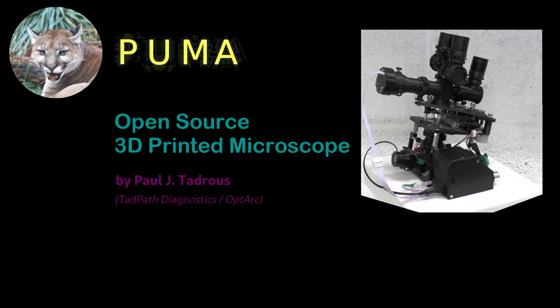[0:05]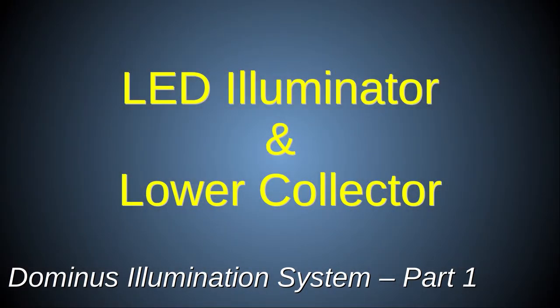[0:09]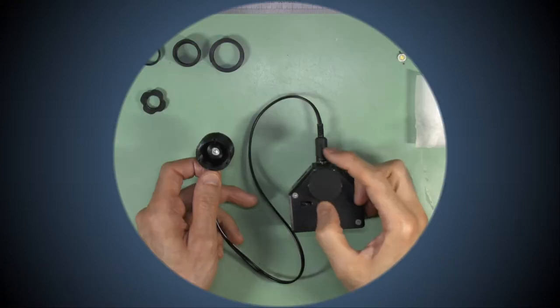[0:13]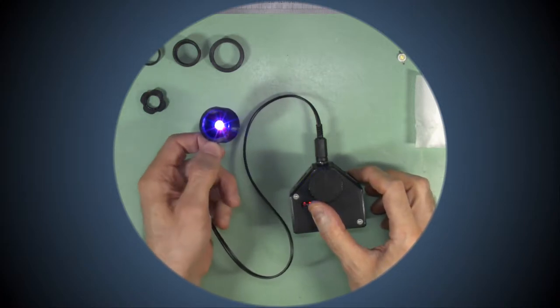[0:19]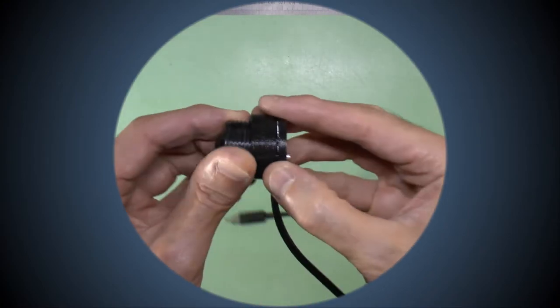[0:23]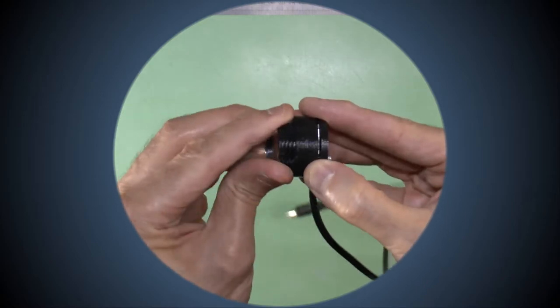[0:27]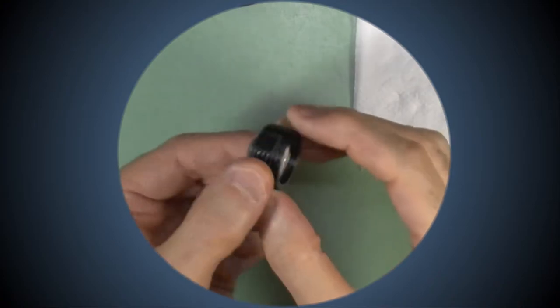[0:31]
In this video, I'll explain how to make the LED Illuminator module. This allows greater control over illumination compared to the passive mirror of the basic foundation scope. The illuminator is always used with a collimator lens system of some kind. So, I'll show you how to build the 2x23mm lower collector collimator.
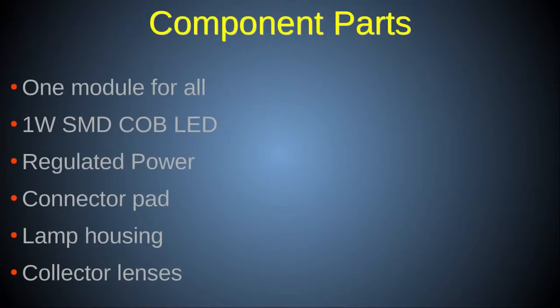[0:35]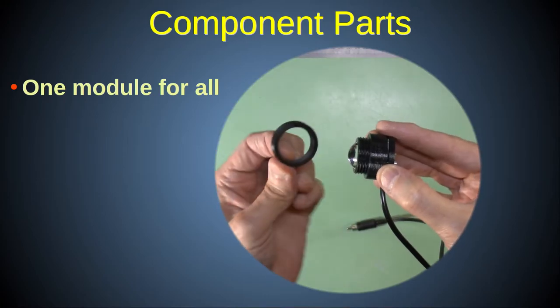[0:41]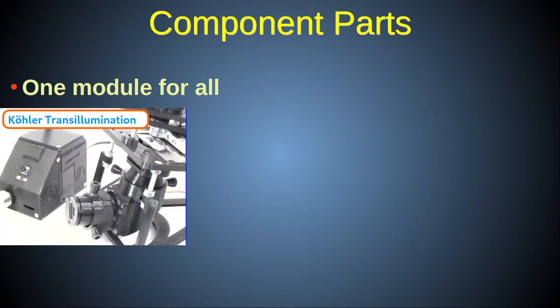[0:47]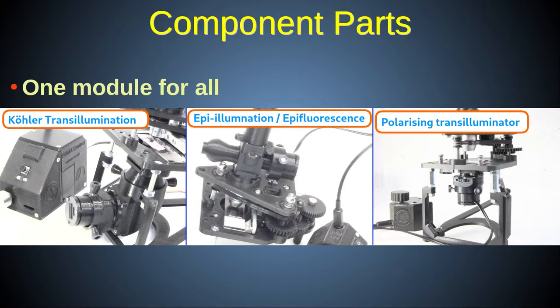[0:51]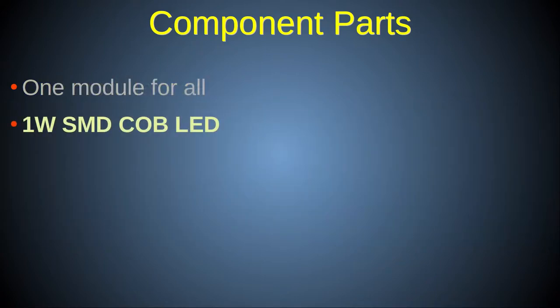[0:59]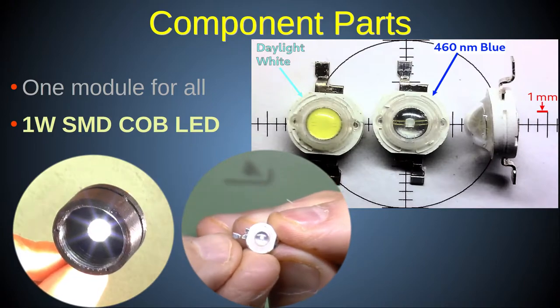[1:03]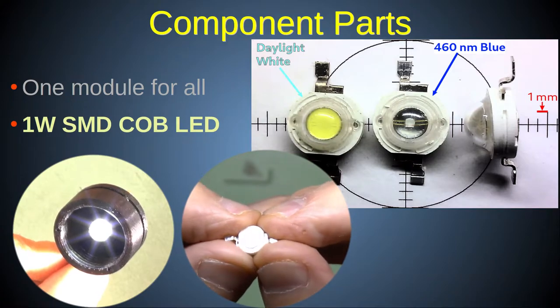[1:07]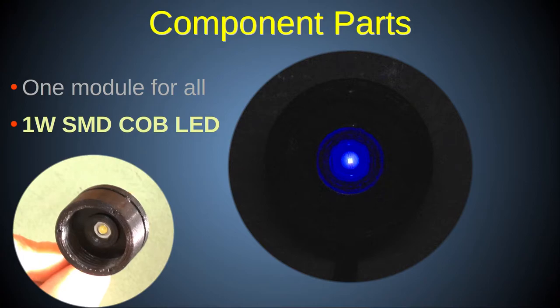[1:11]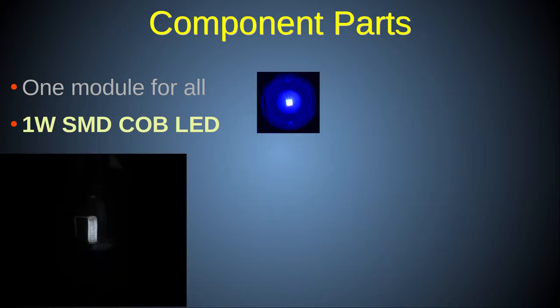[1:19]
First, I'll give you an overview of the components of the PUMA LED illumination system. PUMA was designed to use a single illumination module for all types of microscopy. By swapping in and out a few standard parts, you can use the same module in transillumination, epi-illumination, fluorescence, polarisation, etc. The light comes from an energy-efficient, generic 1-watt surface mount LED bulb that has an approximate point source illuminating area. This is near the theoretical optimum for microscope illumination because it is not spread out in a pattern as with filament bulbs, gas mantles, or a candle flame.
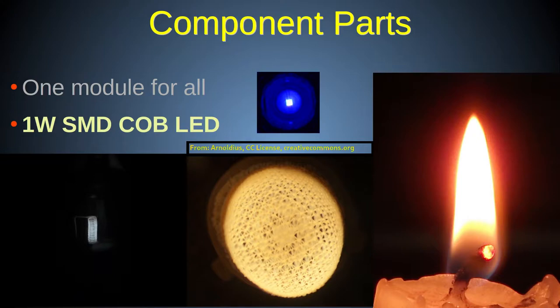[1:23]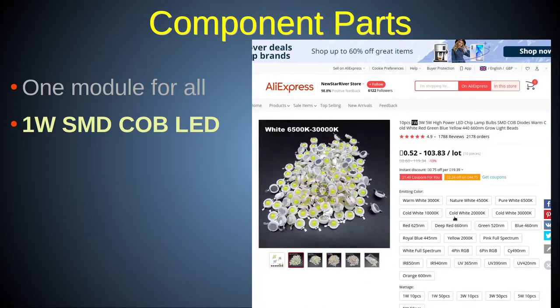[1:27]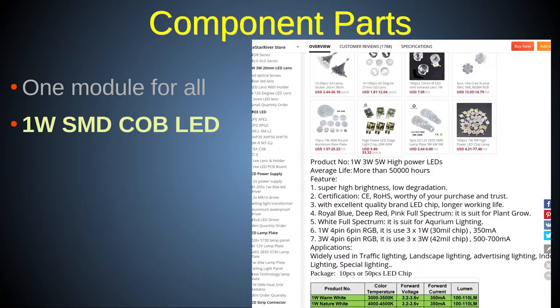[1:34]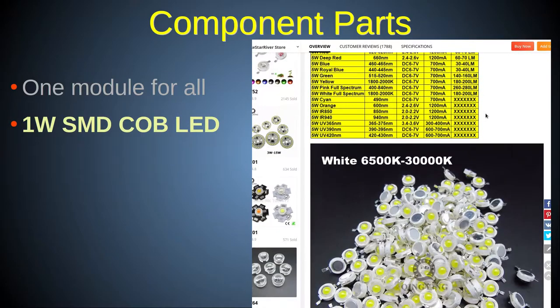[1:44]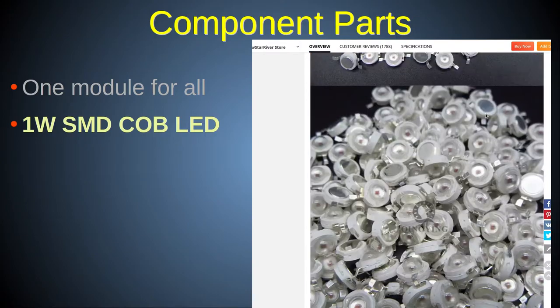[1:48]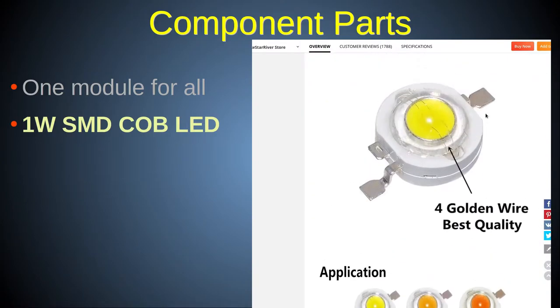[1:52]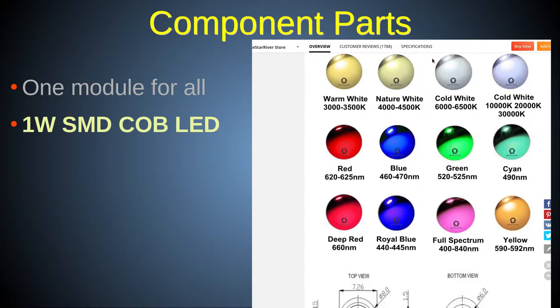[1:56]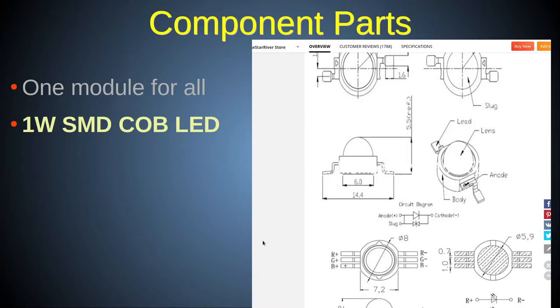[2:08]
Furthermore, these LEDs are available in a wide variety of wavelengths, including various types of white. For most non-fluorescence work, I use the daylight white version, which has a color temperature of 6,500 to 7,000 Kelvin and a brightness rating of 100 to 110 lumens. The single color LEDs are good for specialist applications, such as fluorescence microscopy with various fluorophores. Because all the bulbs are the same form factor and energy rating, you can easily just exchange the bulb in the same PUMA lamp housing module to switch from, say, white light illumination to fluorescence microscopy.
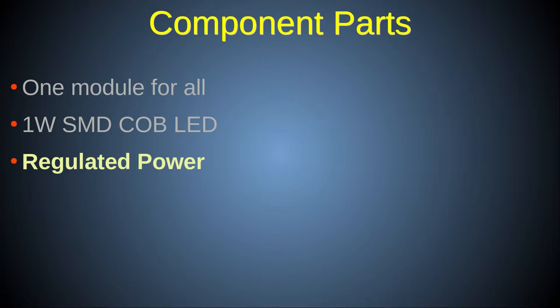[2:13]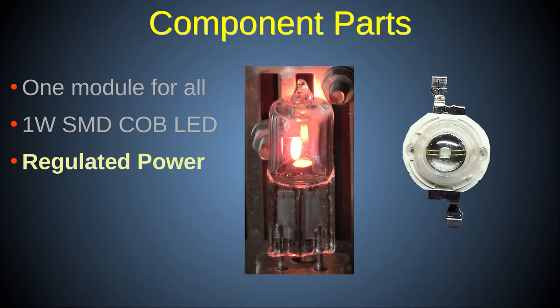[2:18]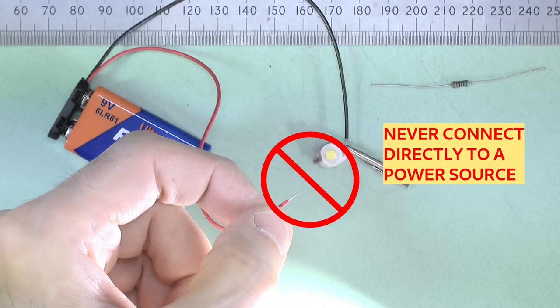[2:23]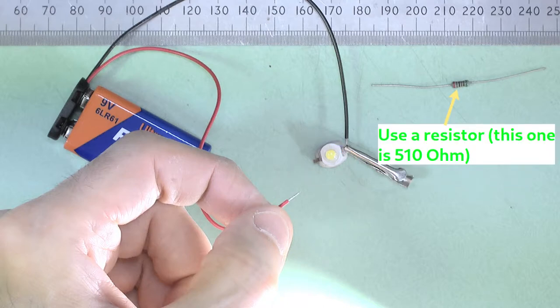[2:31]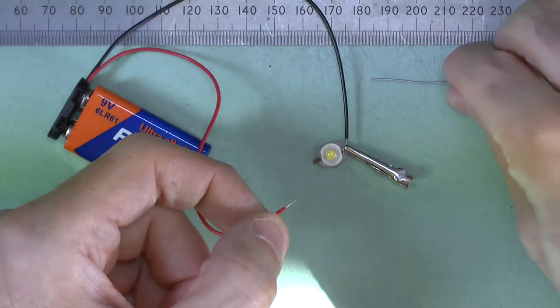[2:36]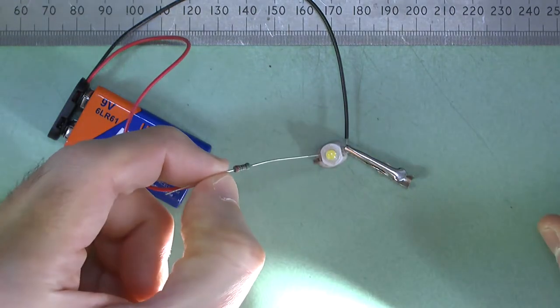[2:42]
Unlike an incandescent bulb, these LEDs have minimal internal resistance, so you cannot just hook them up directly to a battery or power supply because this will cause them to blow instantly. For that reason, you must always use a suitable current-limited power supply. Using a simple resistor in series with a battery will suffice, but it is not very practical or energy efficient. Your battery won't last long, and if using an external power adapter, you will waste a lot of the energy as heat in the resistor.
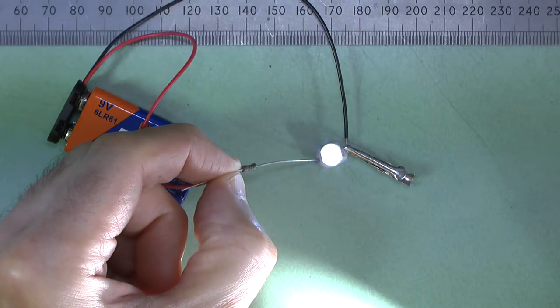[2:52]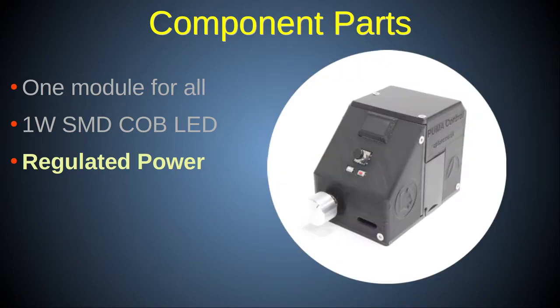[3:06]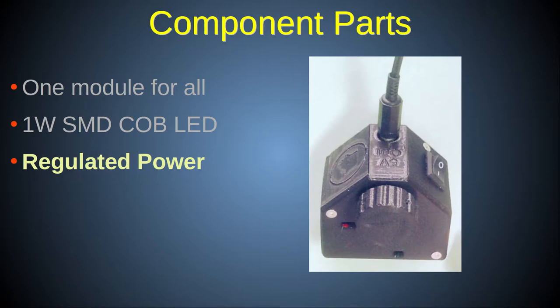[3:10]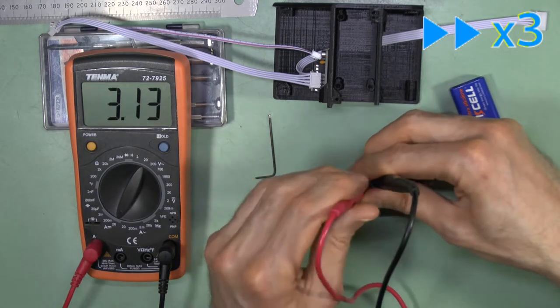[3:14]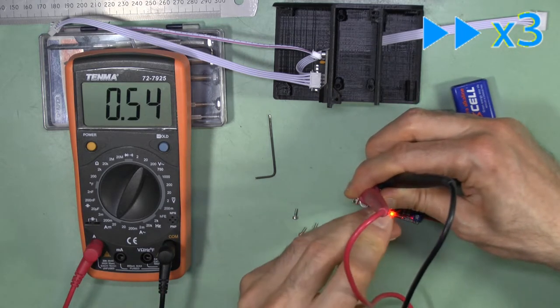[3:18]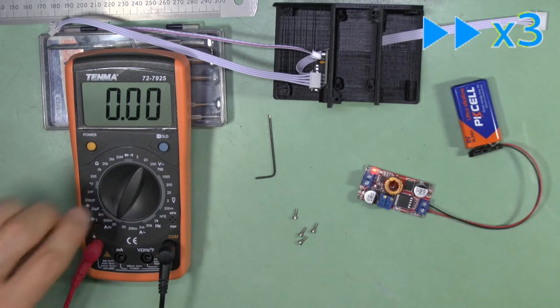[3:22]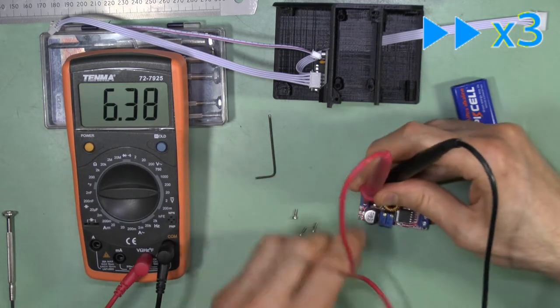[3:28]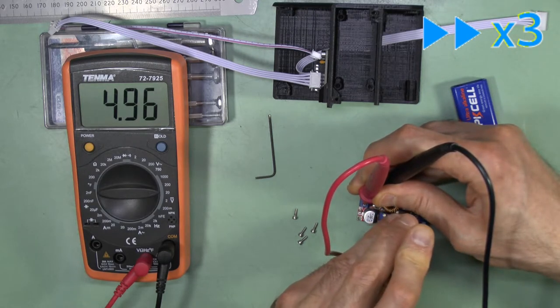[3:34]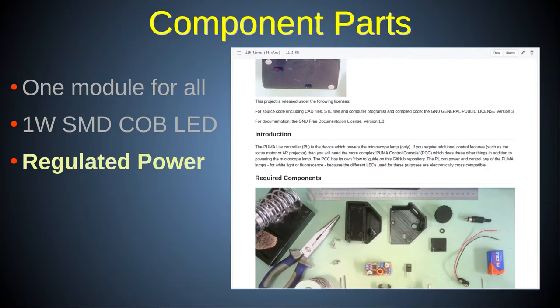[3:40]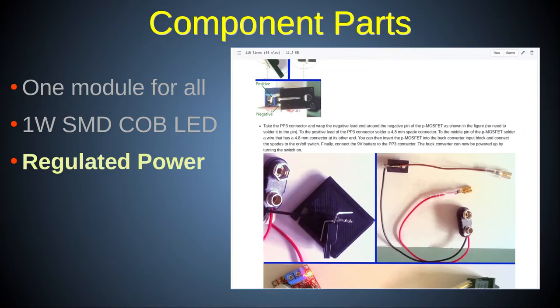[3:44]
For this reason, the PUMA system uses a generic current regulated power module. The same power module is used in PUMA's two portable battery-operated control units, the advanced PUMA Control Console and the simple PUMA Light. This regulator limits the current to a maximum safe level when set correctly, and also to a standard voltage, 5 volts, so gives predictable and reproducible brightness regardless of fluctuations in the input power supply, whether that's a battery or external power adapter. In this video, I'll be using the PUMA Light control unit, and a detailed tutorial on how to build it is available on the PUMA GitHub page, a link to which is provided in the video description.
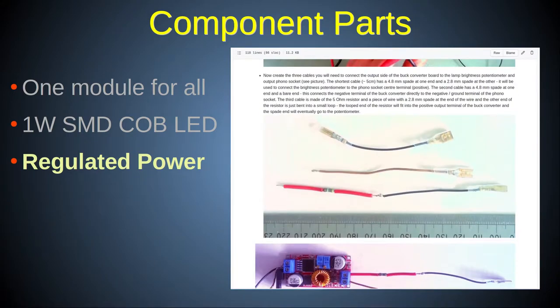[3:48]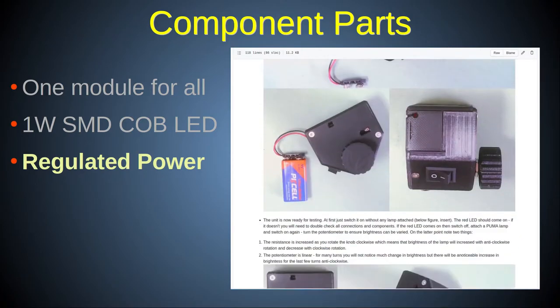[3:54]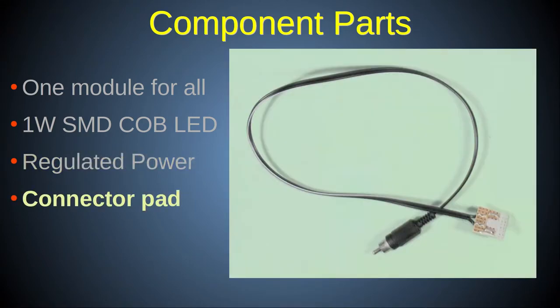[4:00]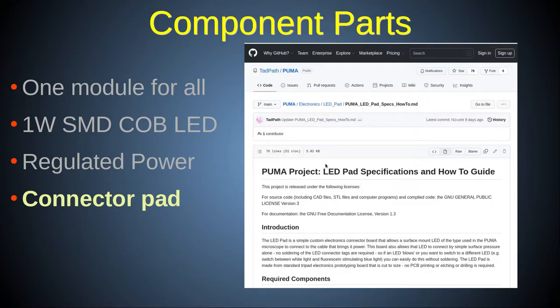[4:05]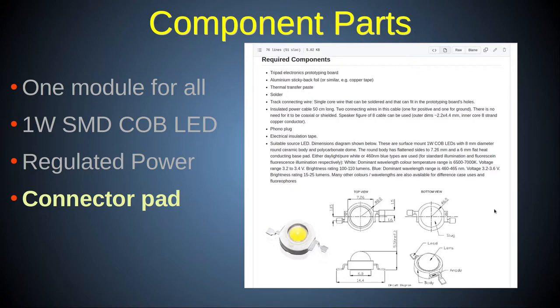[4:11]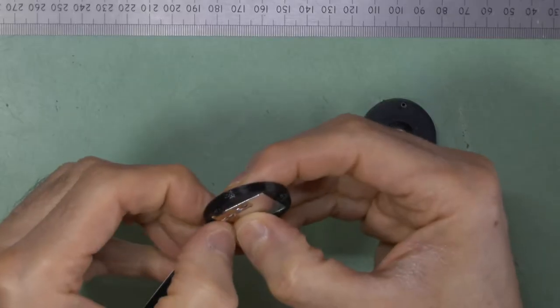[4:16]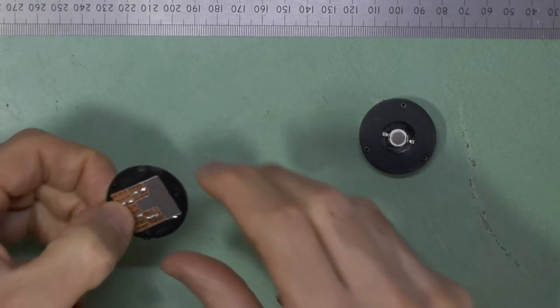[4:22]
So, we have our LED and we have a suitable power supply, but in order for these to be useful, they must be connected to each other. The PUMA standard specifies a simple LED connector pad and cable combo to do just that. Details of how to build this connector pad are also given on the GitHub page. One of the design features worth noting here is that this connector is a simple pressure fit to the LED, meaning that there is no soldering required of the LED to the pad. This makes it easy to simply swap in and swap out LED bulbs for any reason, at any time.
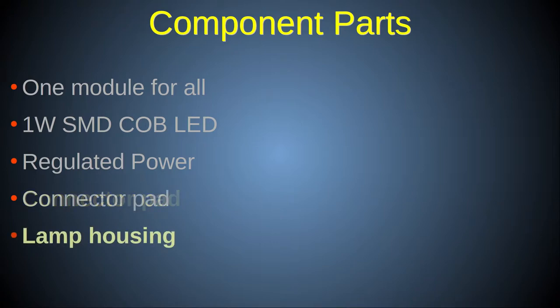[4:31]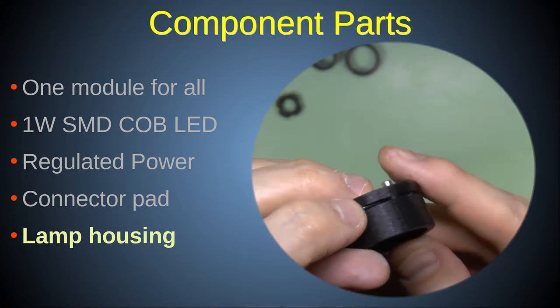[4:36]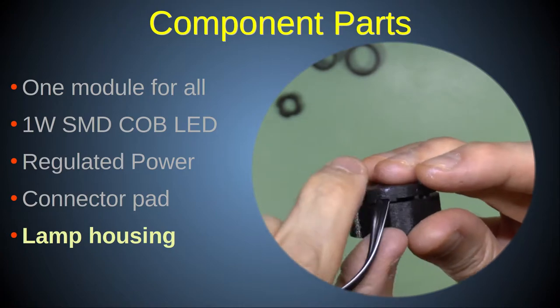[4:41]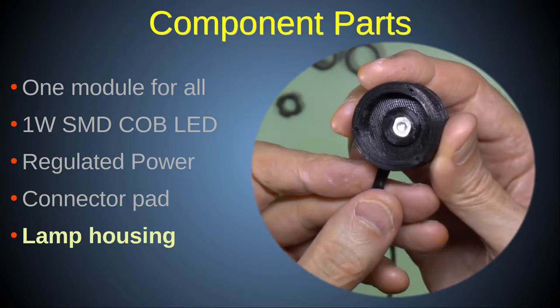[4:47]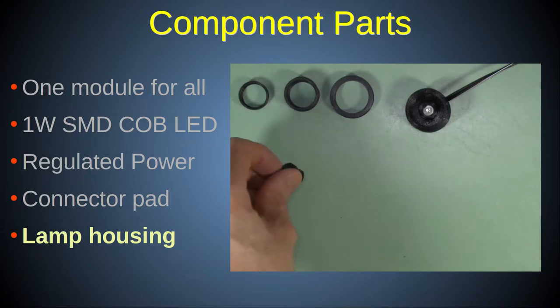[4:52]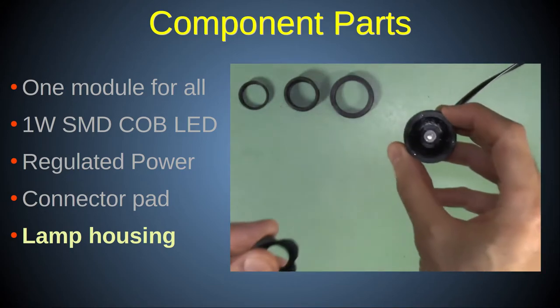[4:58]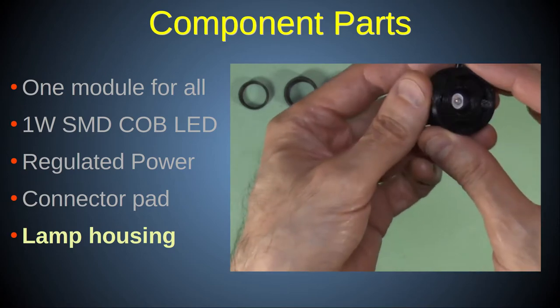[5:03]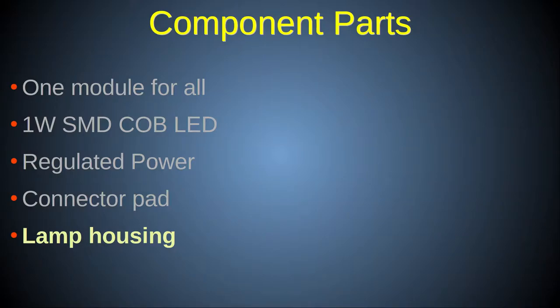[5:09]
In order to hold the LED bulb against the connector pad and keep everything together in a unit that can be easily coupled to the microscope, PUMA specifies a 3D printed LED lamp housing, and I'll show you how to construct that shortly. The lamp housing is designed to accept a spacer and various filters to allow adjustment of the light intensity, diffusion, and wavelength, as well as to adjust the spacing of the LED from the lower collector lenses to adjust the beam collimation to be optimal for different illumination modes, as will be discussed later.
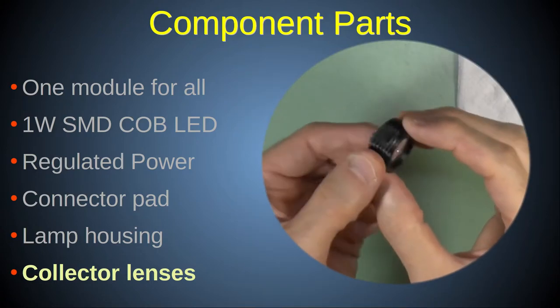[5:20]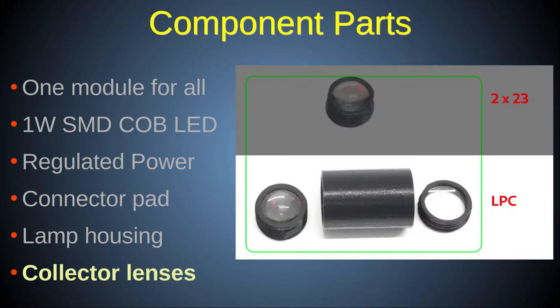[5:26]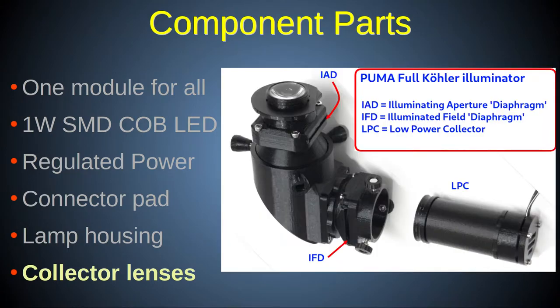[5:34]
Finally, the LED illuminator is always used with some kind of collector lens assembly, with only one exception: the 2x23mm lower collector system is used, and I will show you how to construct that in this video. The exception to this rule is the LPC, or low power collector, which is only used in the very special case where full field Köhler illumination using a x4 objective is required. This is something that even expensive professional microscopes cannot do, but PUMA can, and this will be described in a separate tutorial on Köhler illumination.
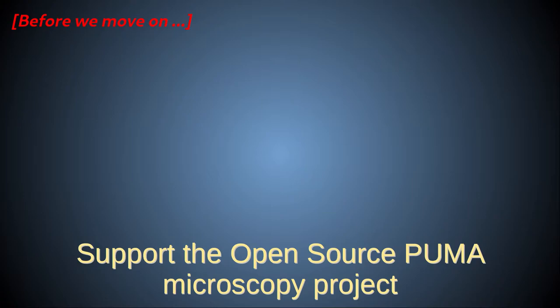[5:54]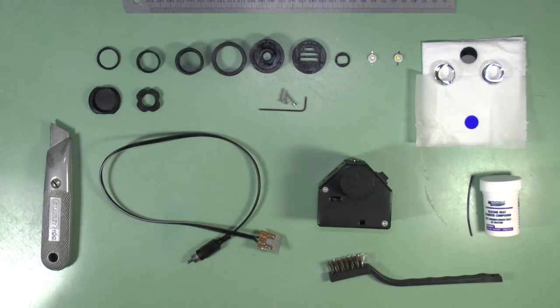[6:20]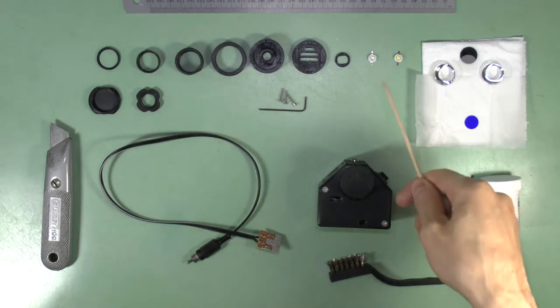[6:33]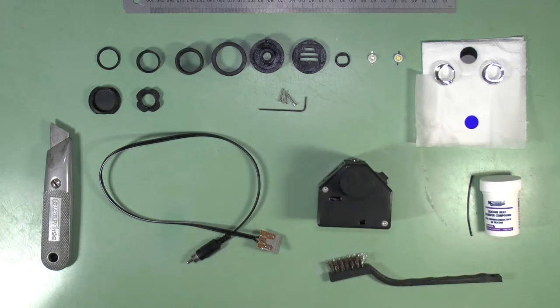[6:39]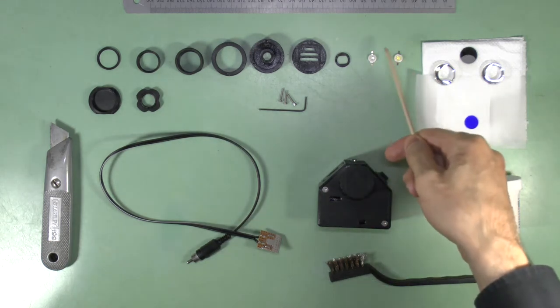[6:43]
These are the parts and some of the tools you'll need to build the LED lamp housing and 2x23mm collector lens. Details are provided in the video description. In this demo, I'll be building a 450nm blue light illuminator, suitable for fluorescence microscopy, but the method is the same for any color LED, including daylight white.
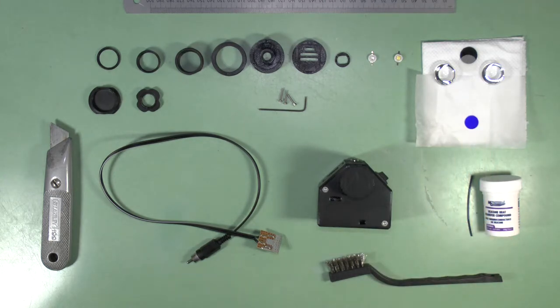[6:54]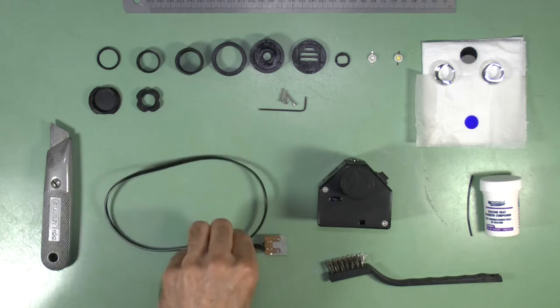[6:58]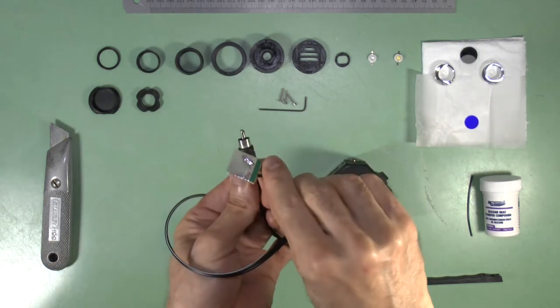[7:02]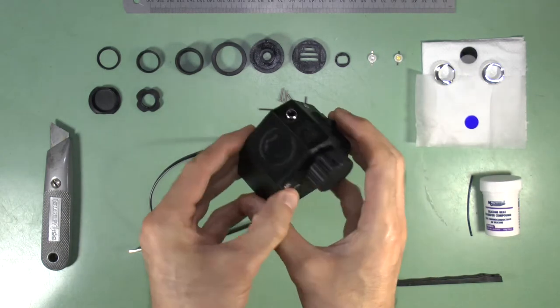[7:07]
I chose this example because it allows me to show you the method for adding an excitation bandpass filter, which is not needed for white light. This demo assumes you have already made the LED connector pad, as shown in the detailed instructions on the PUMA GitHub page, and have a suitable power supply available for testing, such as the PUMA light controller, the construction of which is also described on the GitHub page.
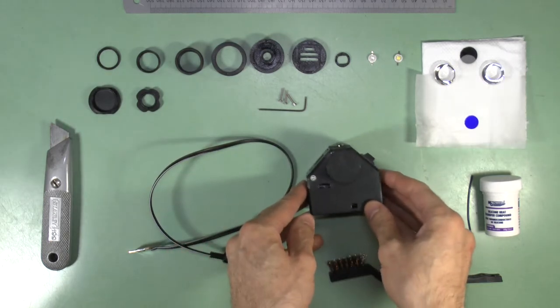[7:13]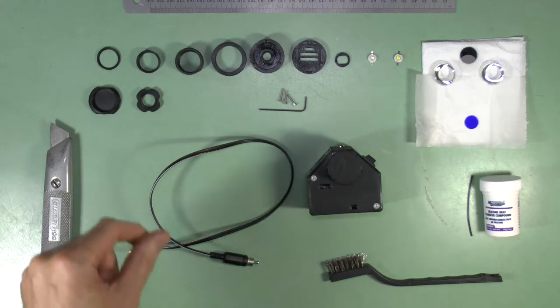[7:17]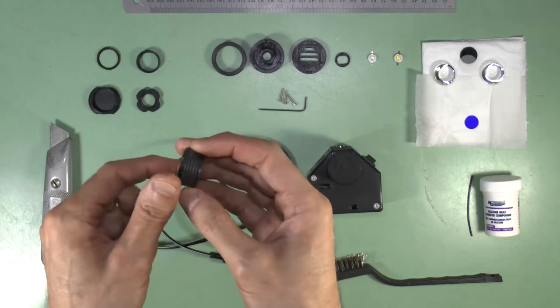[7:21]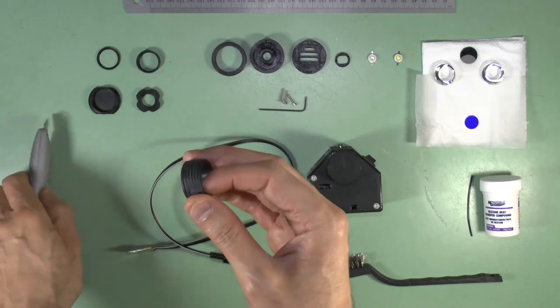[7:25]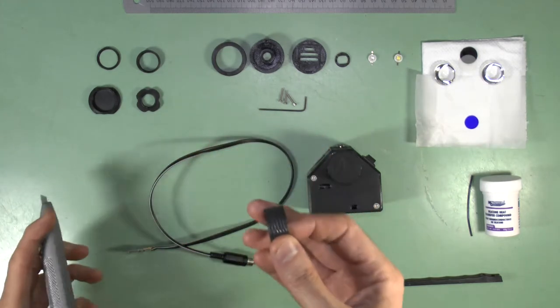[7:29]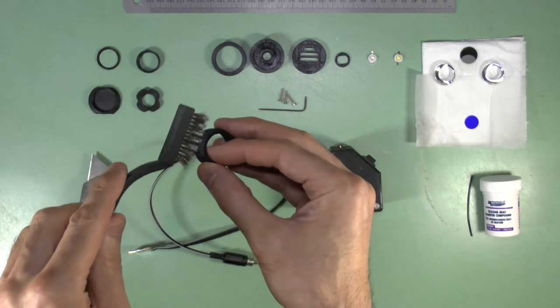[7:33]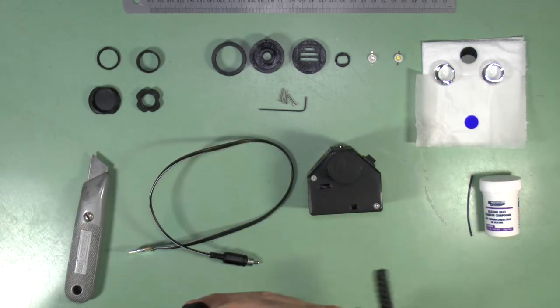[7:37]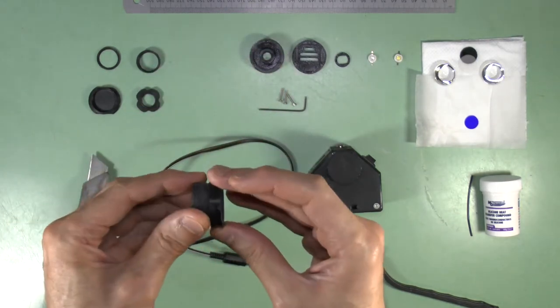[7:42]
The first thing to do is ensure that your printed parts are cleared of any 3D printing imperfections, and that the threaded parts thread into and onto each other well and without hindrance. This may take some scraping or clearing of the threads with a knife and a wire brush, and repetitive trying of one thread onto another. In my experience, the 3D printed seams are the regions where most resistance occurs, so scraping these down may be a good place to start if you encounter problems.
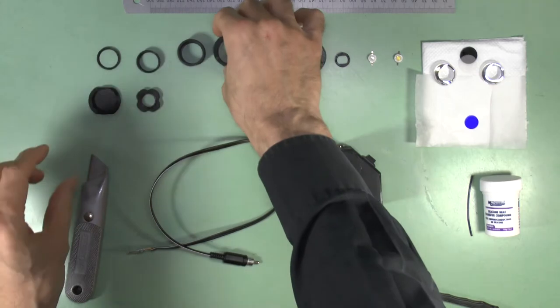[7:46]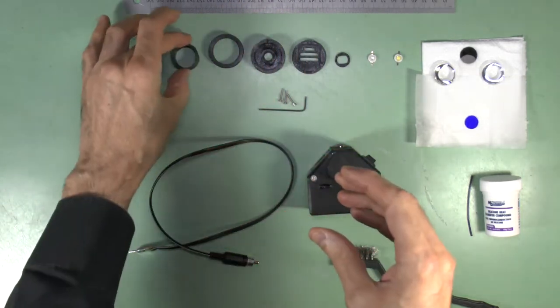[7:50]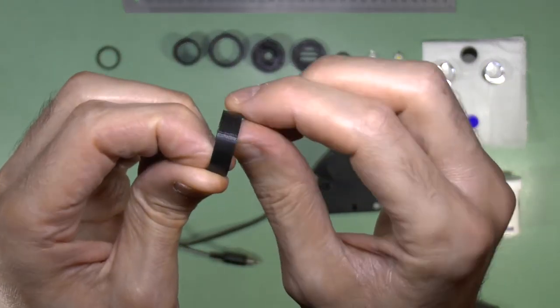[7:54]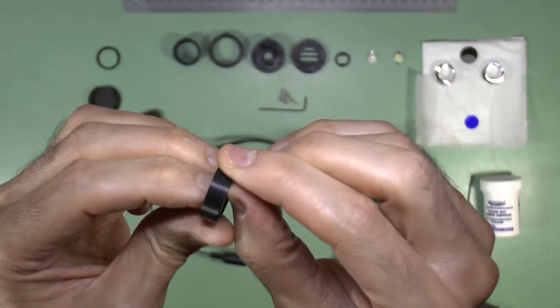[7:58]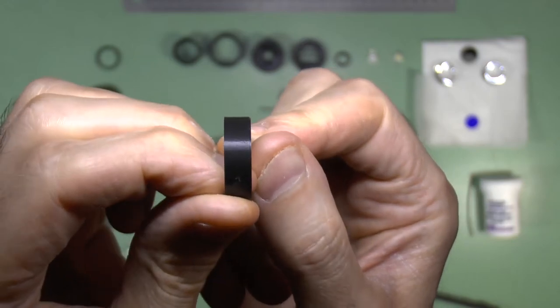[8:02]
Don't sand or otherwise smooth the inner aspect of the LC receptacle or the outer aspect of the LC collars, because we use the friction of the interlocking 3D printed layer lines to adhere these together during construction, so only remove any obvious blebs or loose plastic threads from these parts.
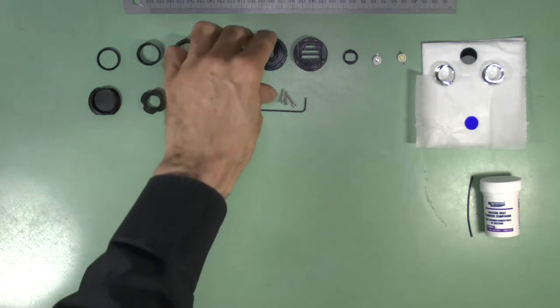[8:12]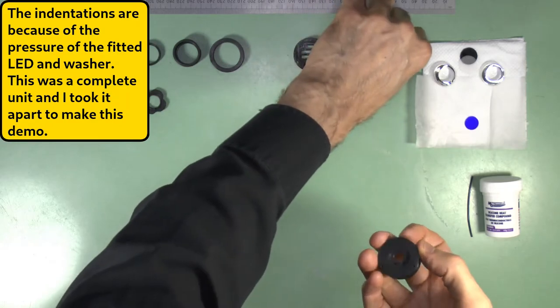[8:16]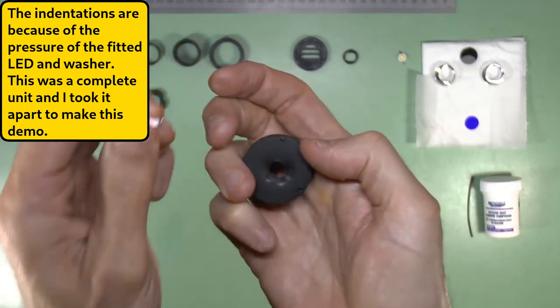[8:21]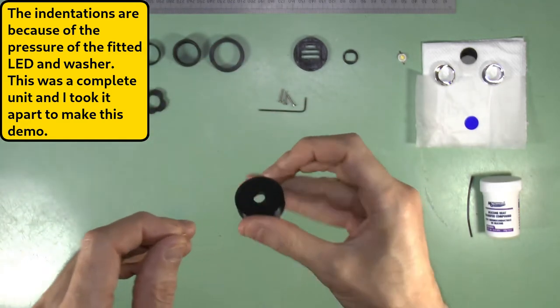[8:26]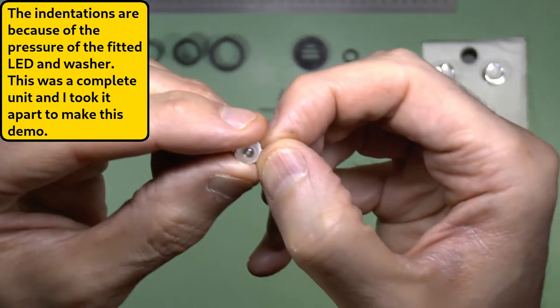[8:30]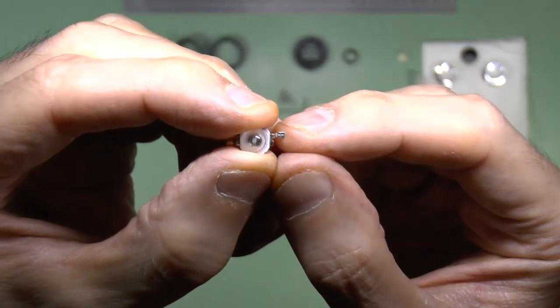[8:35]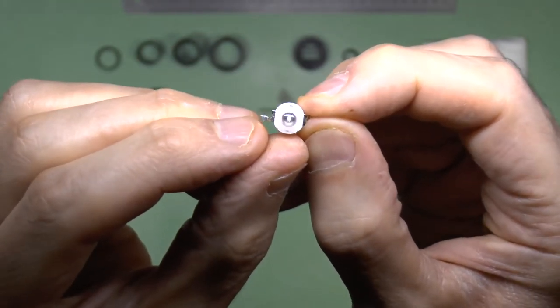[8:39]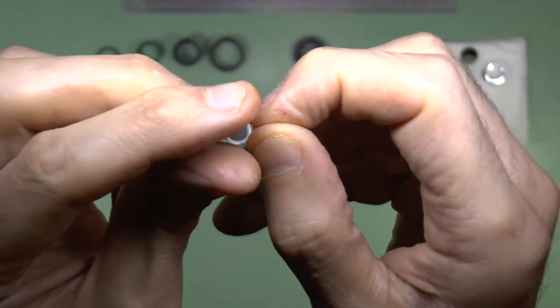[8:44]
Now insert the LED into the back of the LED holder. These LED bulbs have cropped sides, and they simply drop into the similarly shaped hole in the back of the body of the LED holder. However, there are a couple of points to note at this stage. First is to ensure that you insert the bulb with the correct polarity orientation. The polarity of the LED is stamped onto its connector lugs, but only on the front surface, so this is not visible from behind and is hard to see at the best of times.
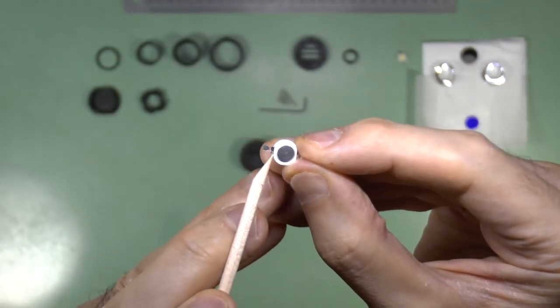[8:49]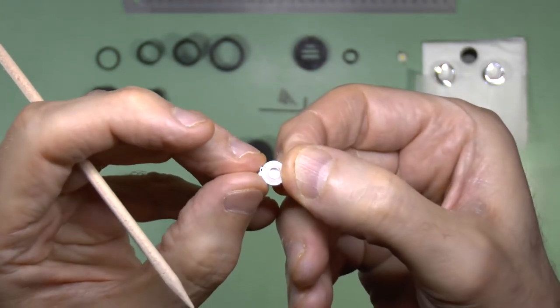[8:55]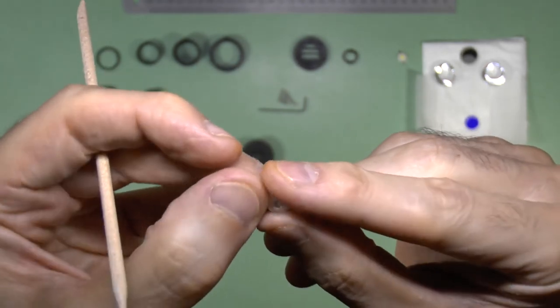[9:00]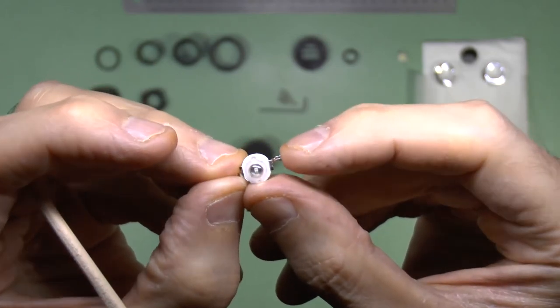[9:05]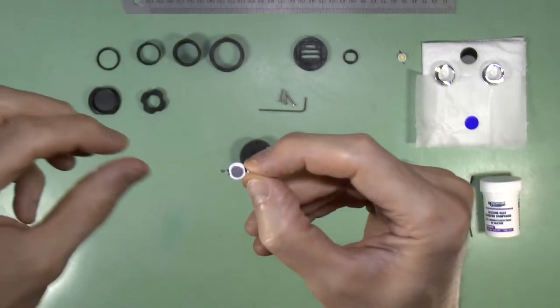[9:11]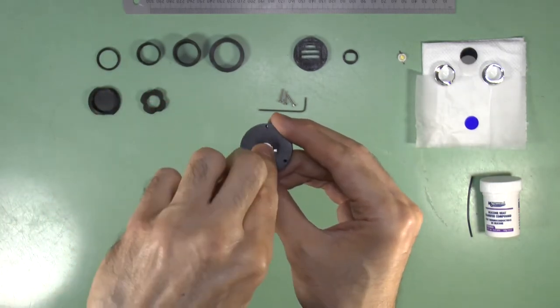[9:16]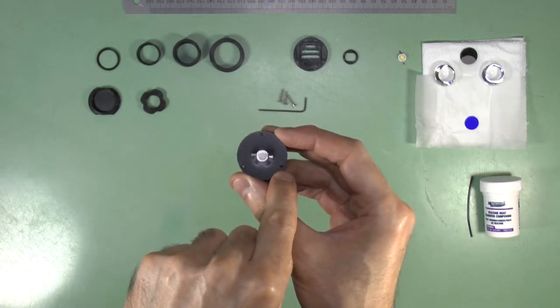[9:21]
In addition, there is a slot cut into the negative terminal here. And this is visible from both sides, so I find that most helpful. Ensure that this is indeed the negative terminal by comparing it to the stamped surface, because some LEDs have a T-shaped slot cut into the positive terminal in the same position instead. Once you have identified the polarity of the terminals, insert the bulb with the positive lug of the bulb facing the right lower M2 screw hole in the back of the LED holder, when viewed from the back with the apical M2 screw hole pointing upwards.
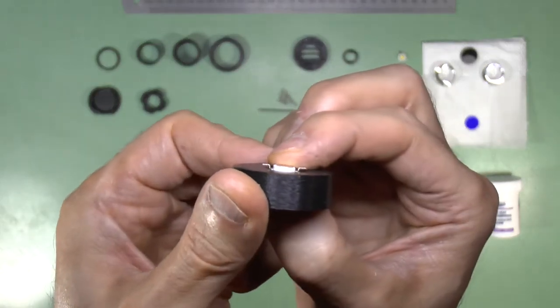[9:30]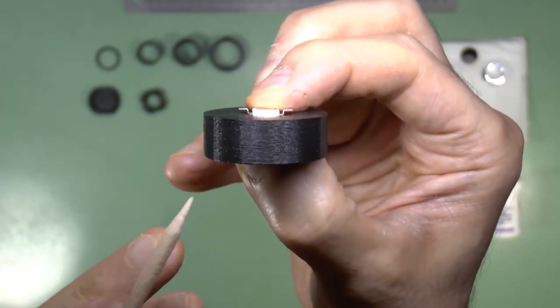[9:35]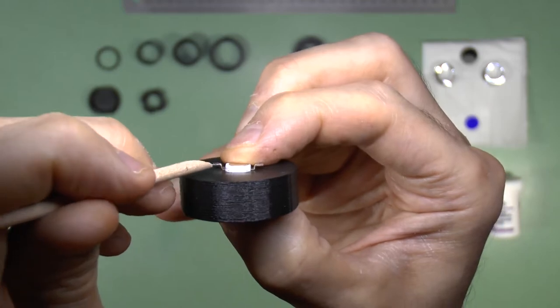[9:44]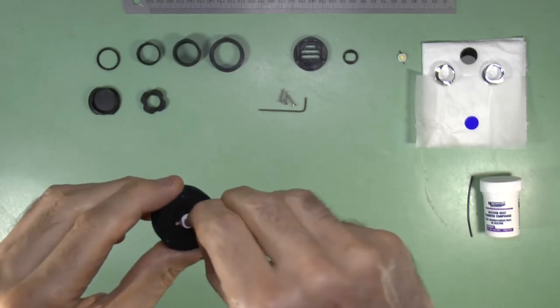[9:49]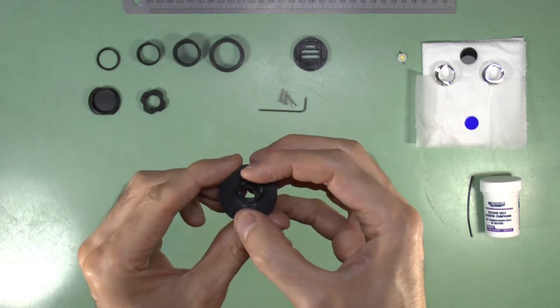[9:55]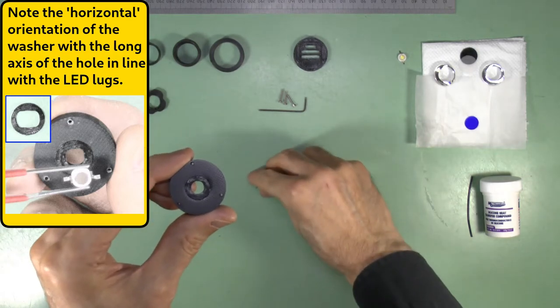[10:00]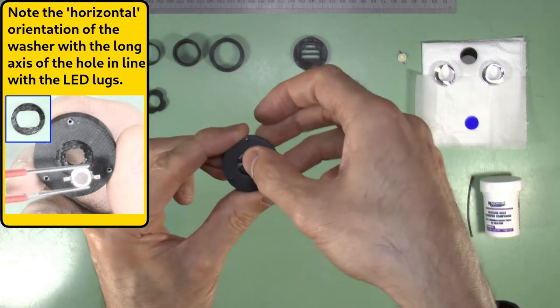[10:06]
Another point to note is that because the connection to the LED is a pressure fit, you can't just put the LED in like this, because there is an air gap between the LED lugs and the surface of the LED holder. Over time, pressure on the lugs will bend them down, and so the connection may become unreliable. For this reason, the special 3D printed washer must be inserted over the hole first, and then insert the LED, observing the correct polarity. The washer will prevent the LED connector lugs from being bent down, and so ensure a reliable connection.
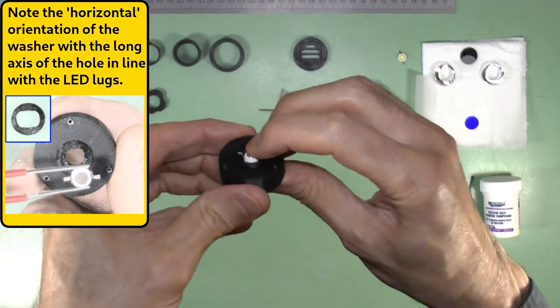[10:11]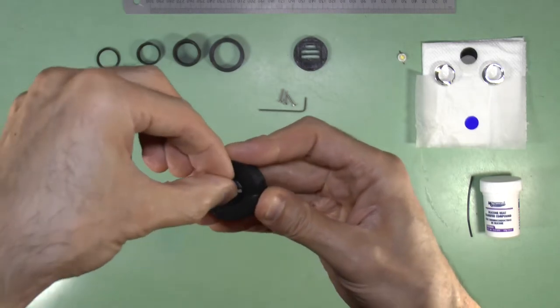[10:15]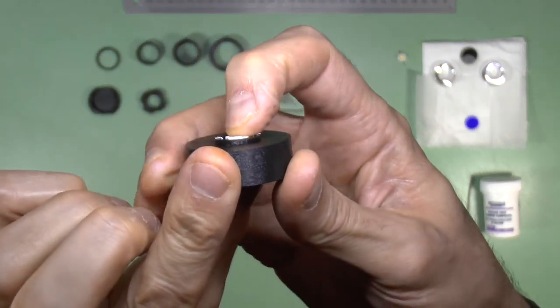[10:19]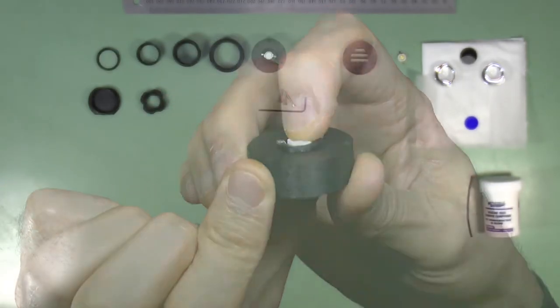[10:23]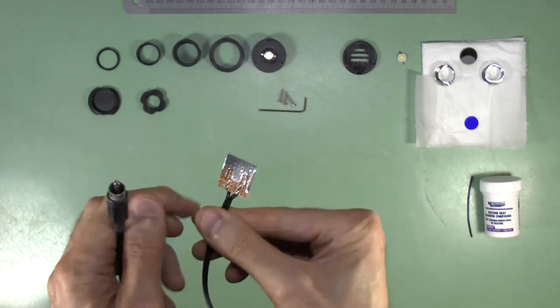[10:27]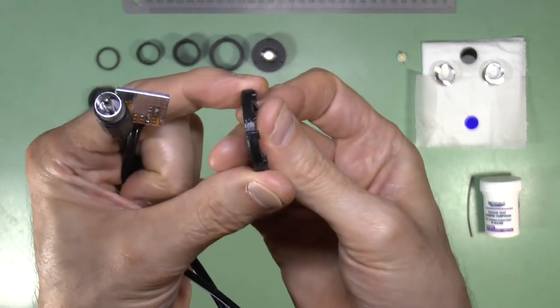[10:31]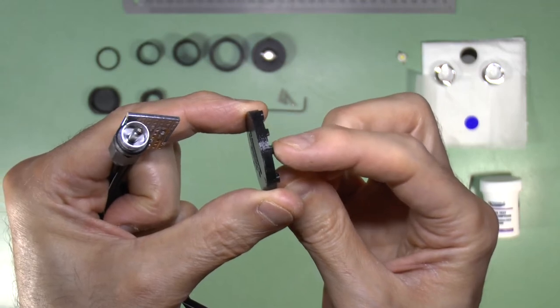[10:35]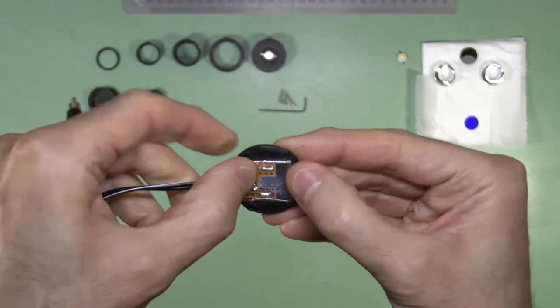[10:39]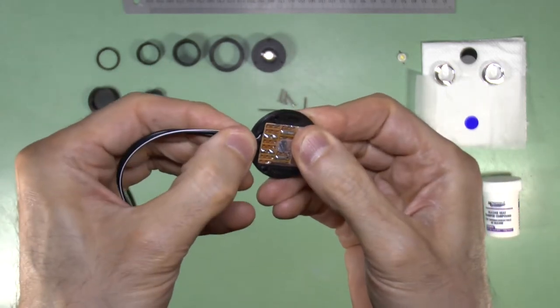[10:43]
Next, fit the LED connector pad into the recess in the back cover plate of the lamp housing, taking care to ensure that the cable exiting the pad passes between these two posts in the cover. The pad may tend to rise up while doing this, but you can just push it down with your finger till the cover is fitted on the LED holder.
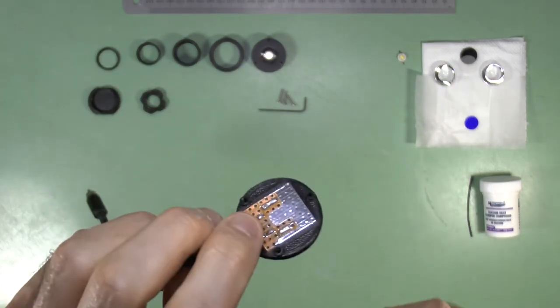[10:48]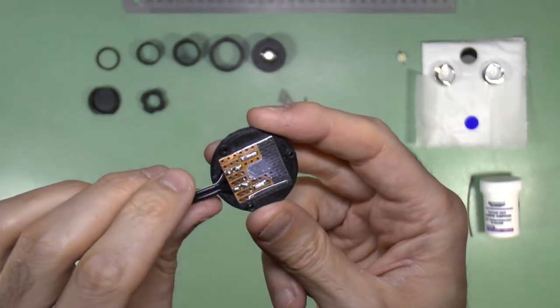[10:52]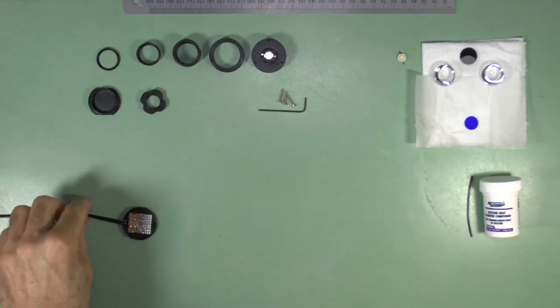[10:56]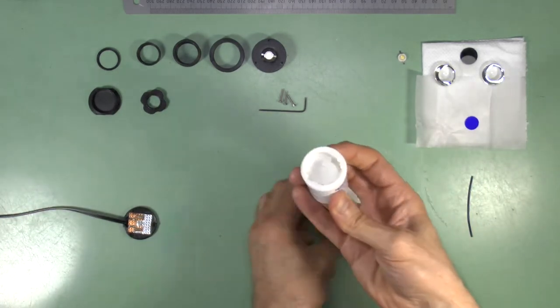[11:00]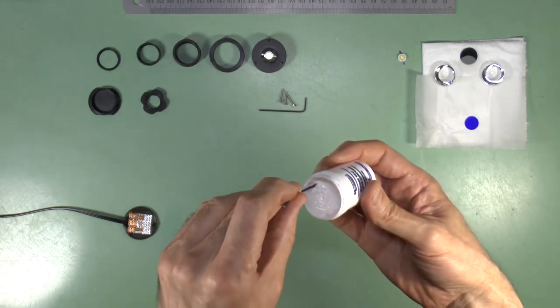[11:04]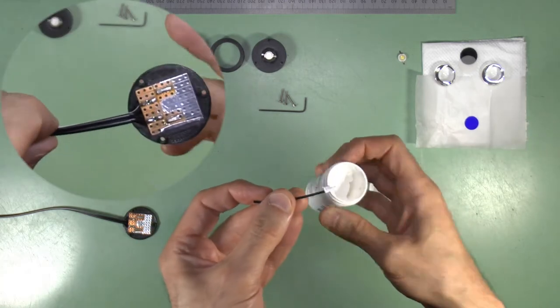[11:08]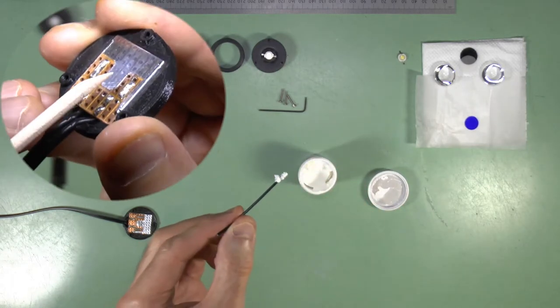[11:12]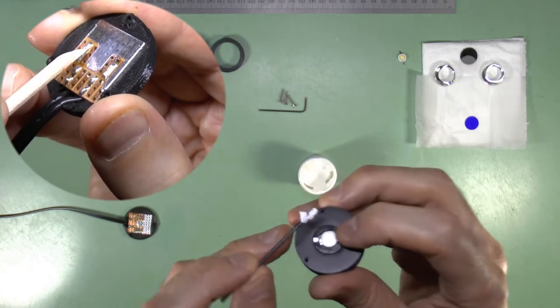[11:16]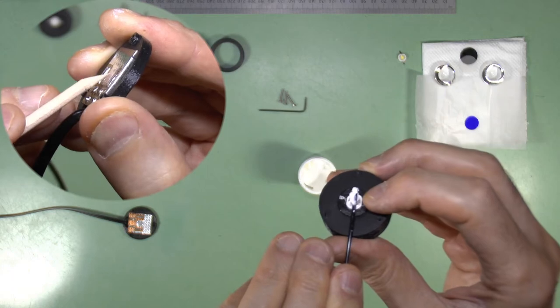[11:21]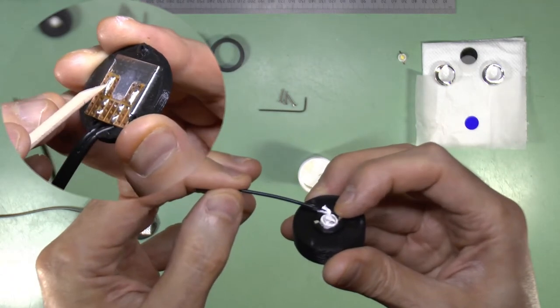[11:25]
Now, put a raised blob of thermal transfer compound on the back of the LED. Make sure it is raised so that it makes contact with the heatsink foil on the connector pad, because these tinned connector areas are raised above the heatsink foil, so when they make pressure contact with the lugs of the LED, there will be a gap between the heatsink area of the LED and the heatsink foil of the connector pad, and you want the heatsink compound to bridge that gap.
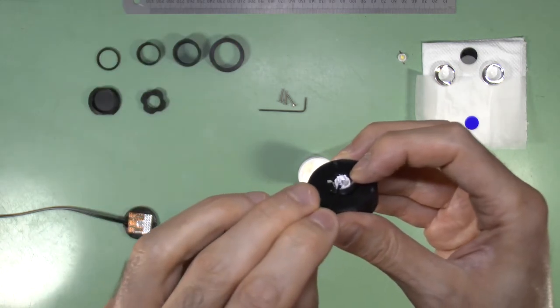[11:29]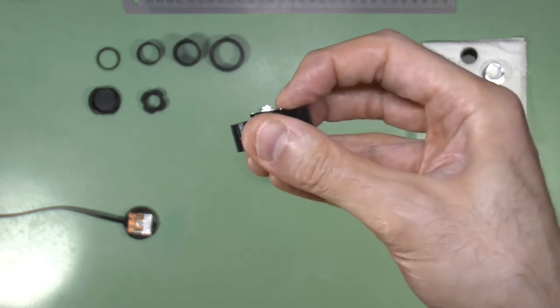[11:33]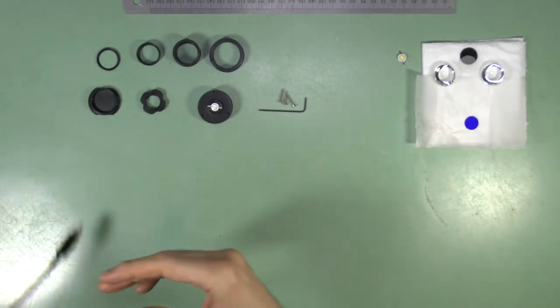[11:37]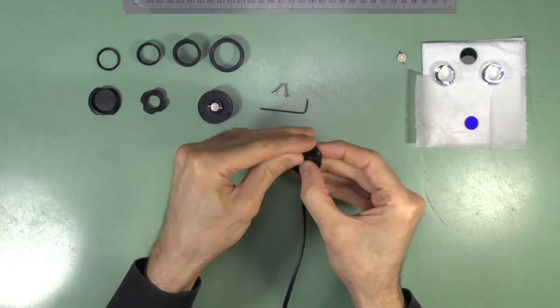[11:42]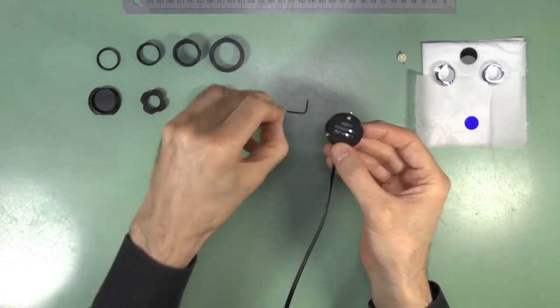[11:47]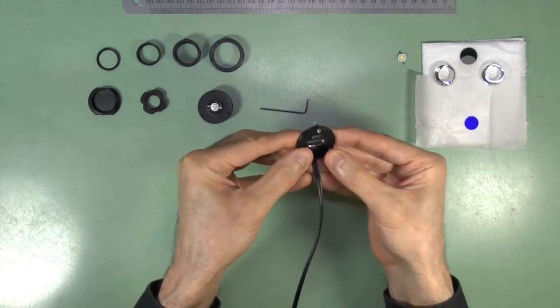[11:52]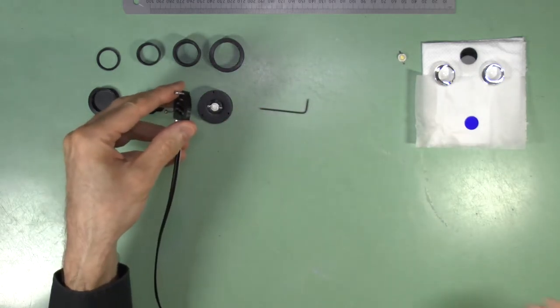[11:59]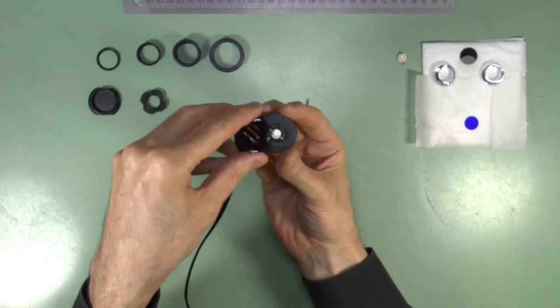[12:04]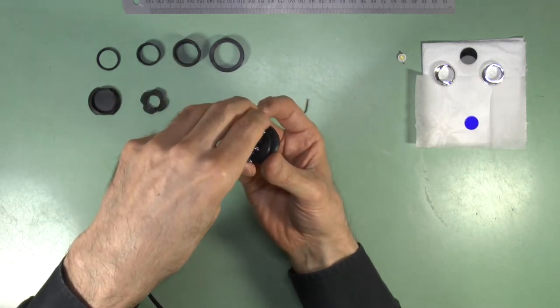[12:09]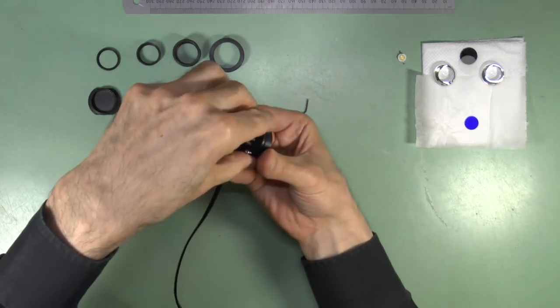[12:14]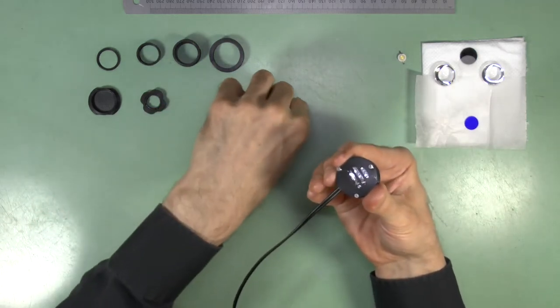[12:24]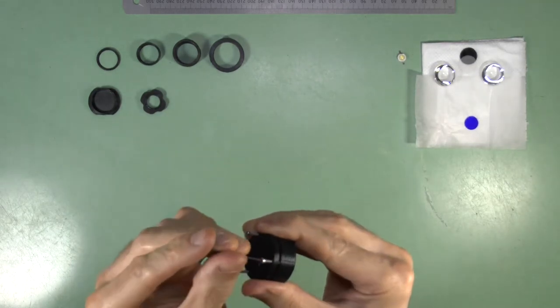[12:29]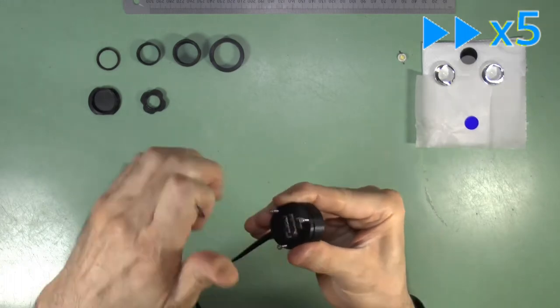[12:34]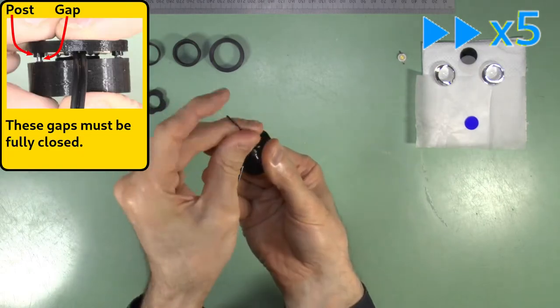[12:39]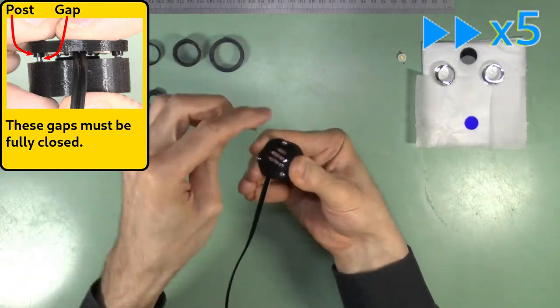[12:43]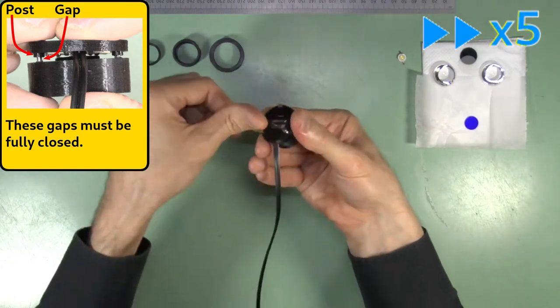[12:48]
Now fix the back cover onto the LED holder. First, put the M2 screws in their holes in the cover. Now hold the cover in position, lining up the screws with their holes. And thread the M2 screws into their plastic thread holes in the LED holder. It is best to screw them in only a little distance each, and then continue to screw them in a little more each till no gap is seen between these posts and the LED holder casing. All the while taking care to ensure that the cable of the connector pad stays between the two posts in the back cover and is held firm.
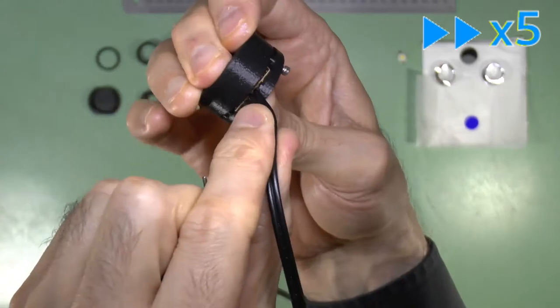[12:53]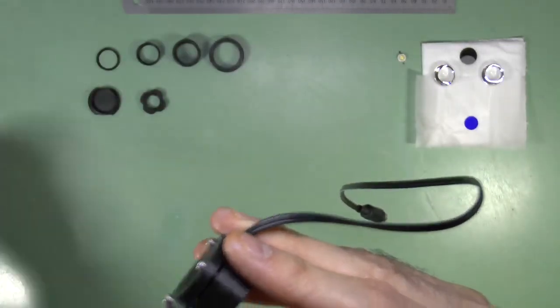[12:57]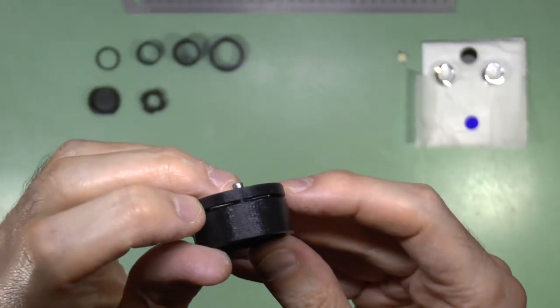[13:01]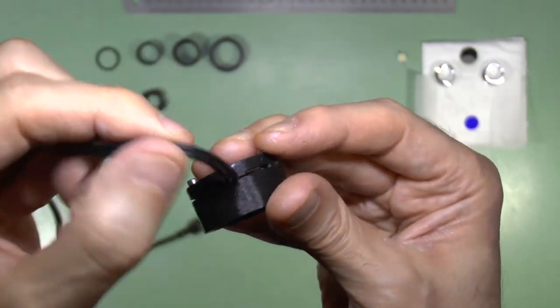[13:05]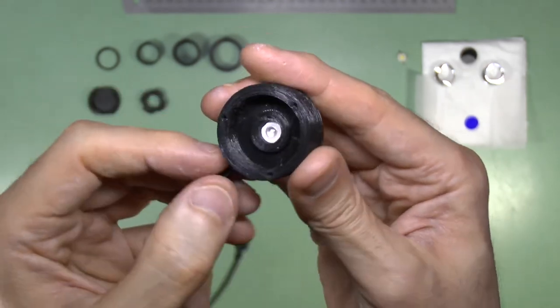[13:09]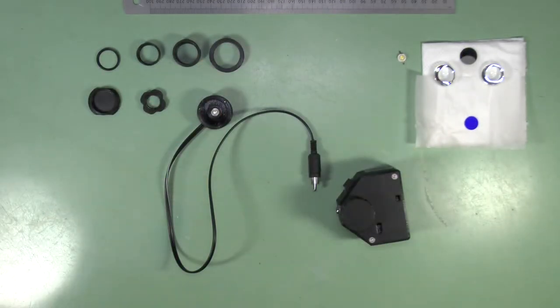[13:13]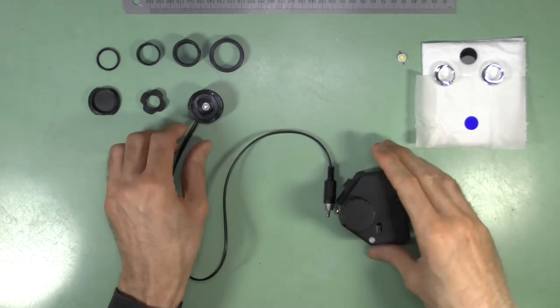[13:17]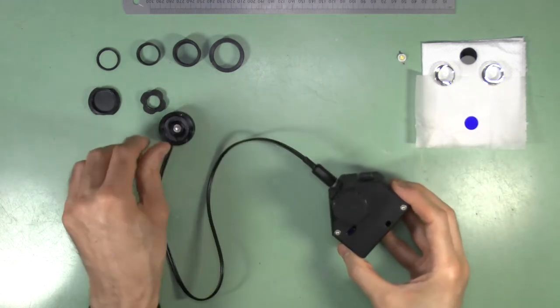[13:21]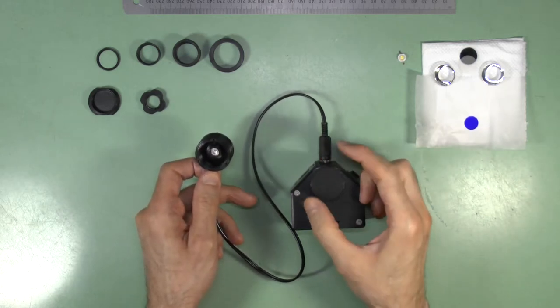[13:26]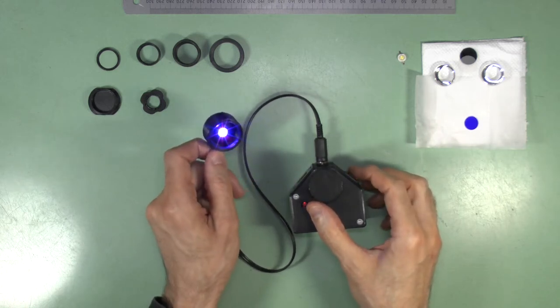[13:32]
Now the basic lamp housing assembly is complete. At this point, you should test the illuminator by connecting it to a suitable current-limited power supply. With the PUMA power units, you should always set the brightness rheostat to a non-maximum position before switching on to ensure that some additional resistance is in the circuit for additional safety in case there is a problem with the power regulator board.
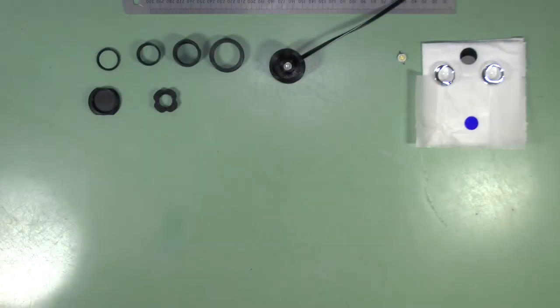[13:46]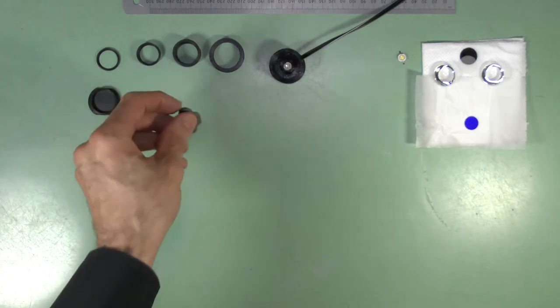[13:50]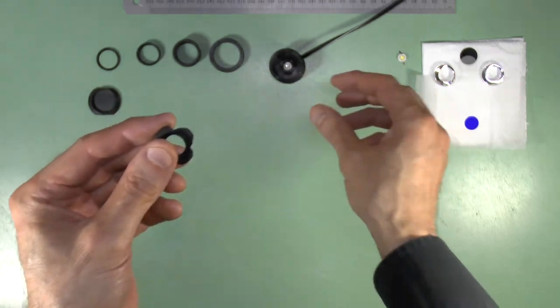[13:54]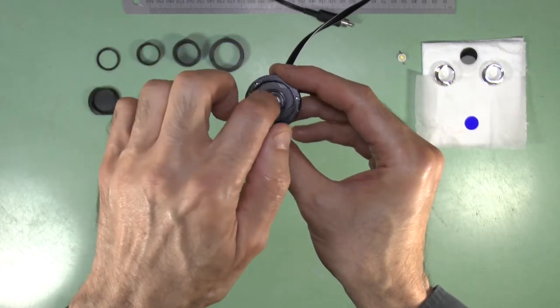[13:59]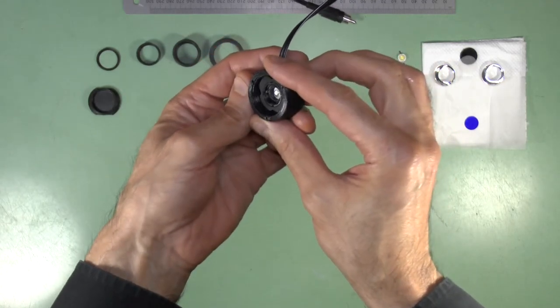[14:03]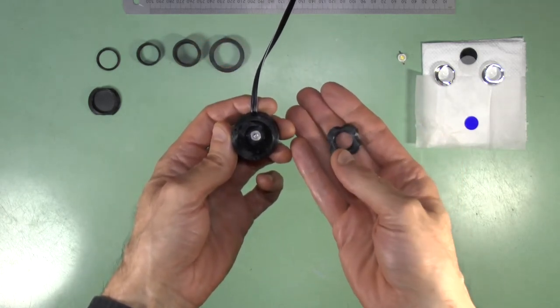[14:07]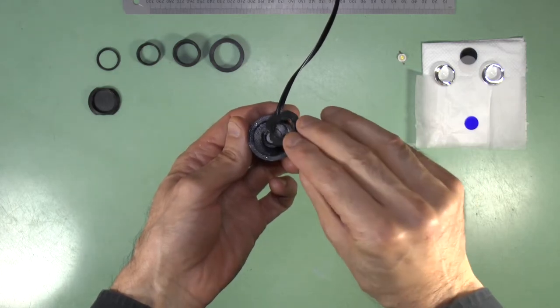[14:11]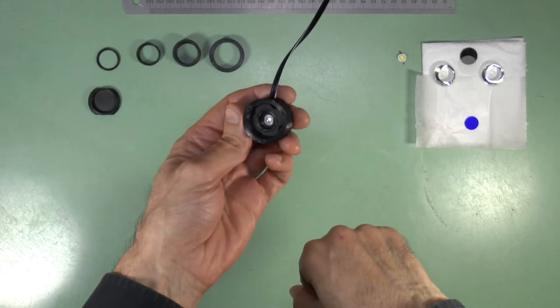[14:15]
We now turn our attention to the 5mm spacer. The spacer is an optional module which sets a predefined gap between the LED and the lower collector lenses to adjust the collimation of the beam. Without the spacer, the collimation will be suitable for objectives of ×10 magnification and below when used with the Köhler illuminator. However, for higher magnification objectives, the spacer must be put in place to achieve the most accurate even illumination.
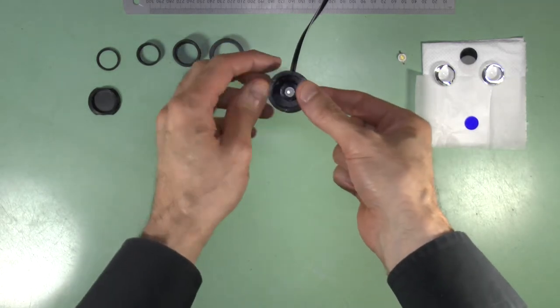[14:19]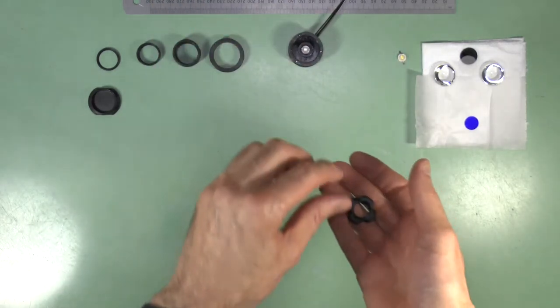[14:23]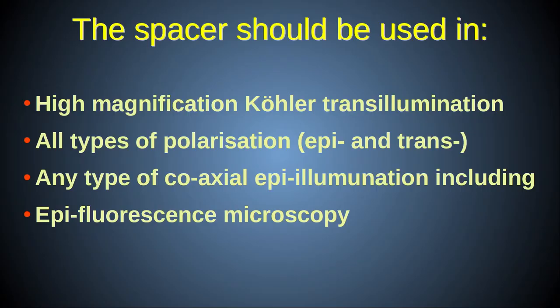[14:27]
This adjustment is required because the lenses used in the collimator are not perfect and so cannot give an optimum parallel beam for objectives of all numerical apertures. In addition to high magnification Köhler illumination, the spacer is also required in all cases where the illuminator is used for polarisation microscopy and epi-illumination microscopy, including epifluorescence.
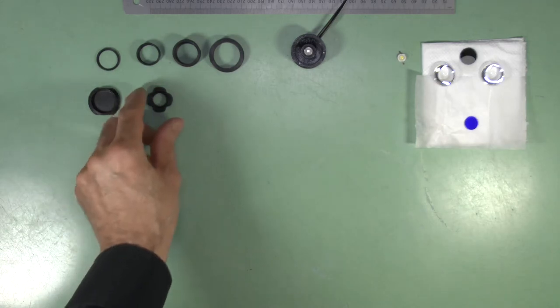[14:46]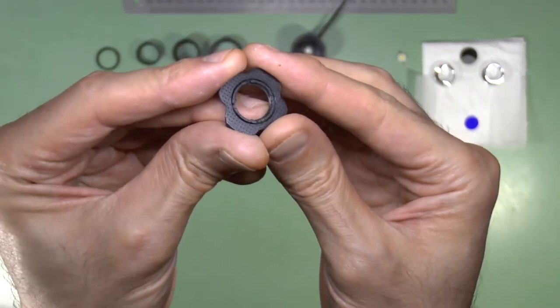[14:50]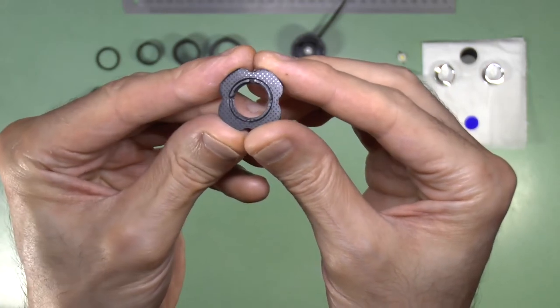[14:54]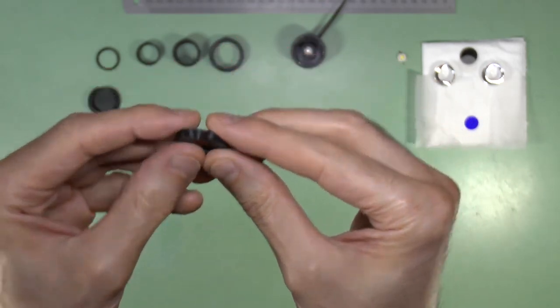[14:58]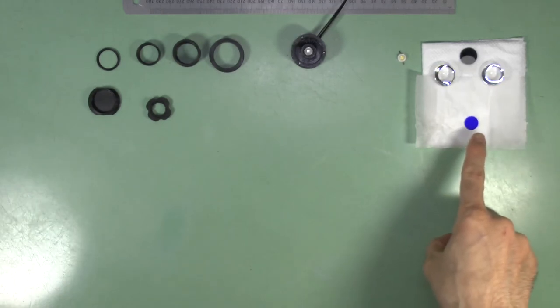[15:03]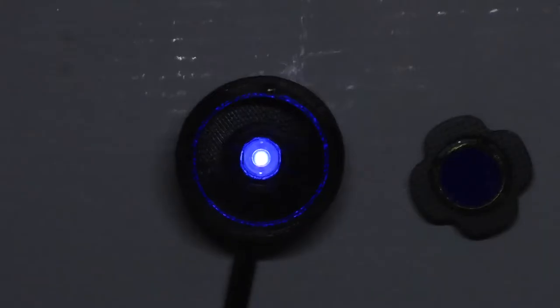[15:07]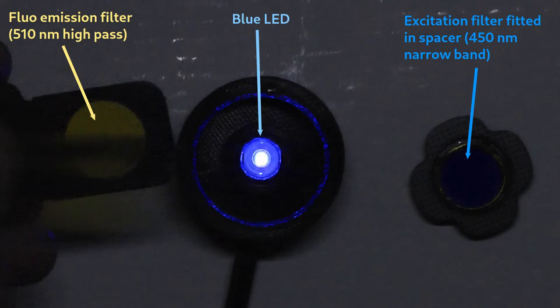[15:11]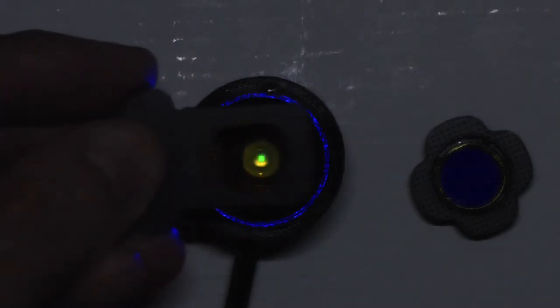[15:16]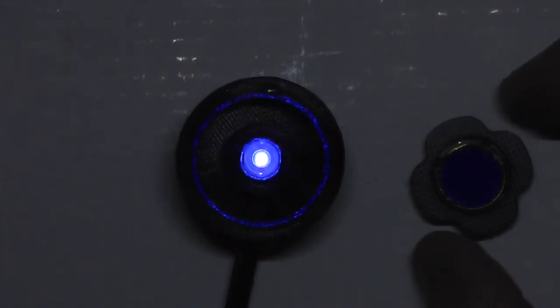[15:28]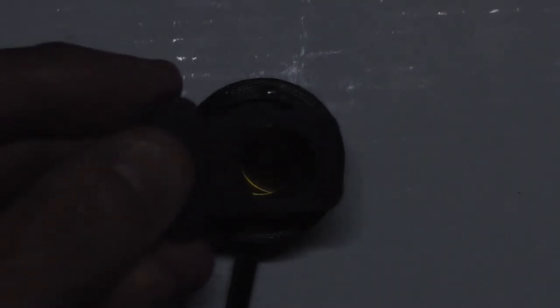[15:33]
In regards to fluorescence, note that the spacer has a specially designed flexible rim receptacle well in its top surface for accepting a filter 14mm in diameter by up to 1mm thick. In this case, we'll be using a 450nm narrow bandpass excitation filter. This is needed because the blue LED, despite having a stated output wavelength range of 460 to 465 nanometers, also has a significant amount of yellow-green residual emission, which gets through the 510 nanometer emission filter used for fluorescein fluorescence microscopy. This results in high background brightness, which makes this LED unsuitable to detect faint fluorescent signals if used without a filter.
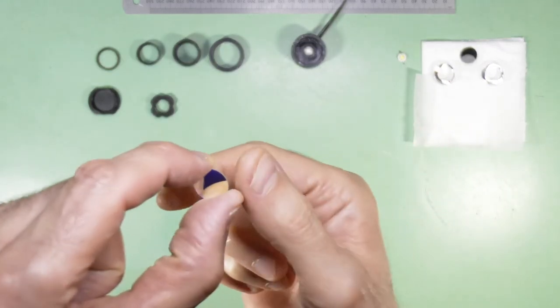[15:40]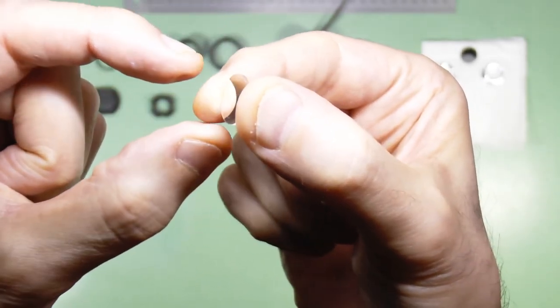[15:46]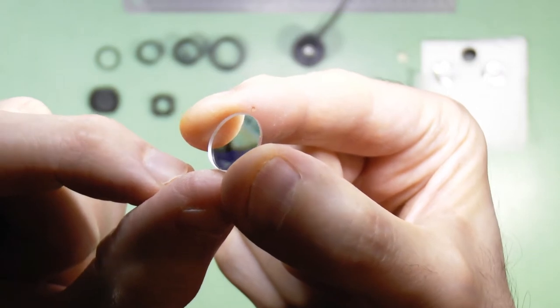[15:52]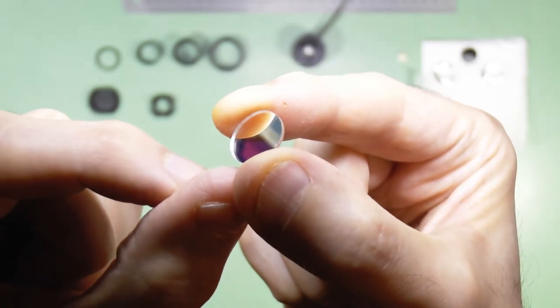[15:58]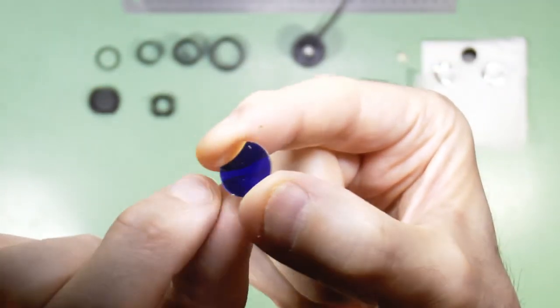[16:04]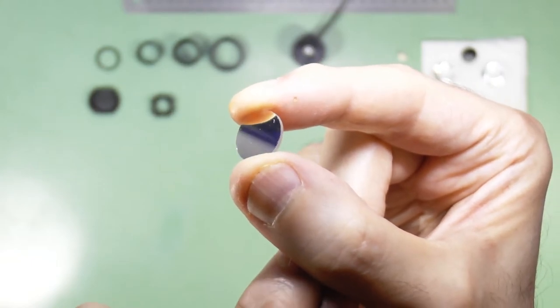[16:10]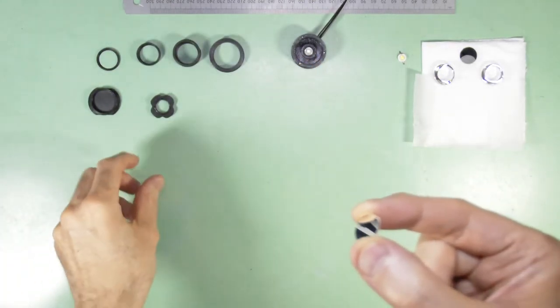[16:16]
Note that the excitation filter is coated on one surface only with its special dichroic coating. You can tell which is the coated surface by looking at the filter at an angle. When you look from the uncoated surface, you will see right through to the other surface, and you can tell this because you can see the edge of the filter through the surface. When you look from the other surface, you can't see through to the edge. So this is the coated surface. We want to insert the filter with the coated surface facing inwards towards the LED bulb. This is to protect the coated surface from dust and scratches when it is in place.
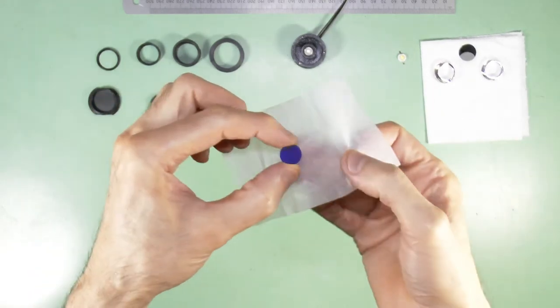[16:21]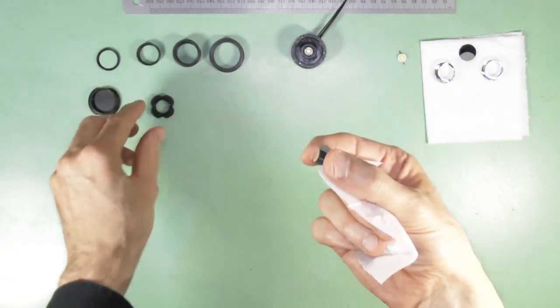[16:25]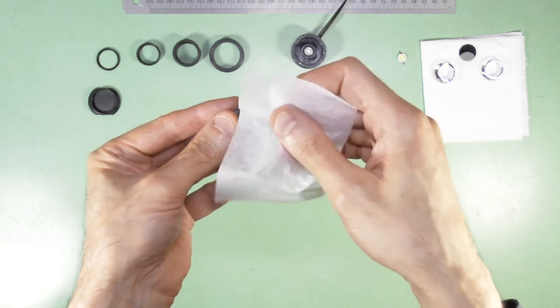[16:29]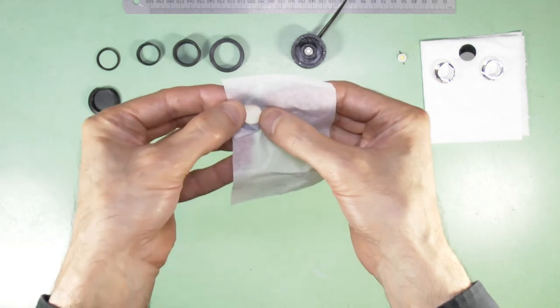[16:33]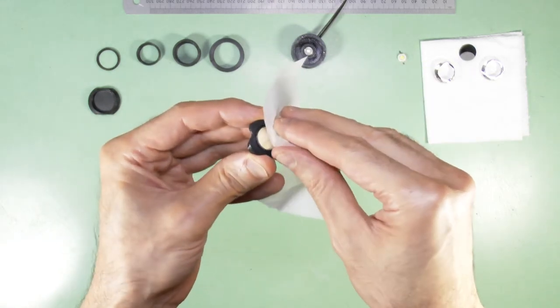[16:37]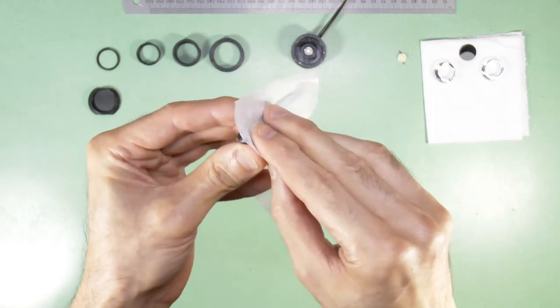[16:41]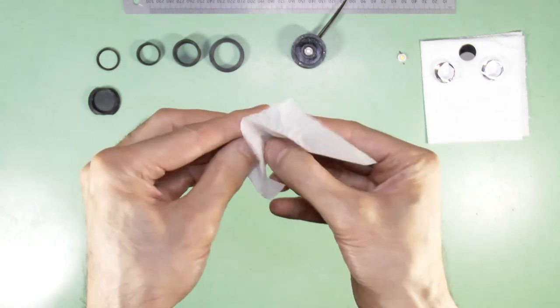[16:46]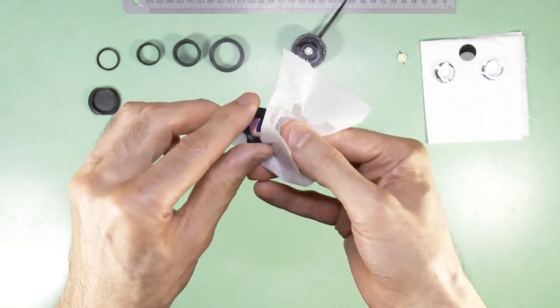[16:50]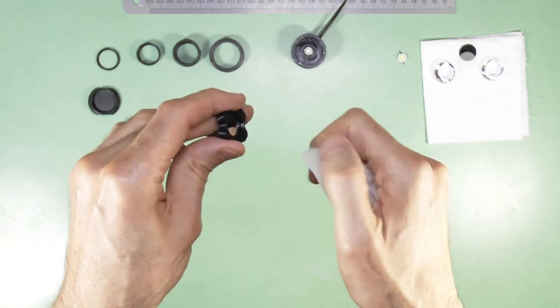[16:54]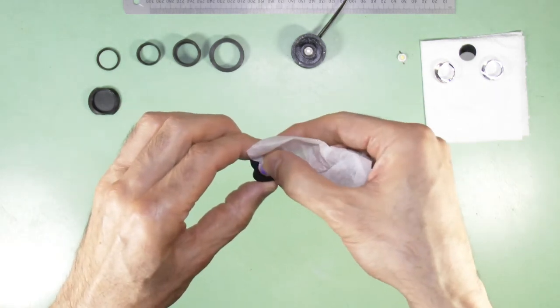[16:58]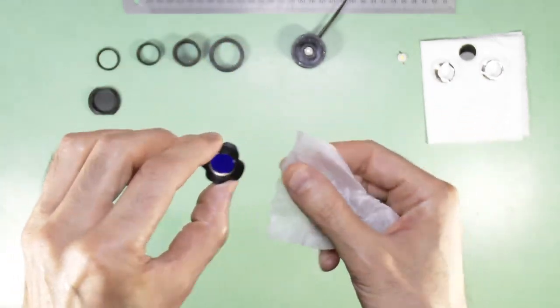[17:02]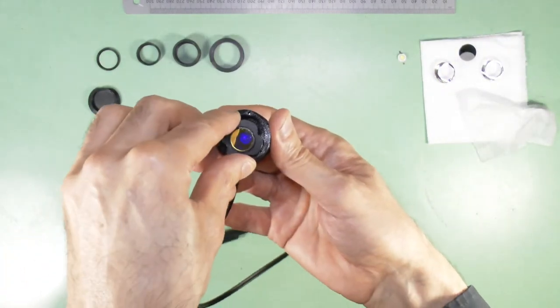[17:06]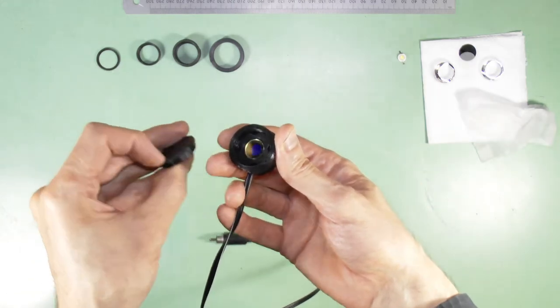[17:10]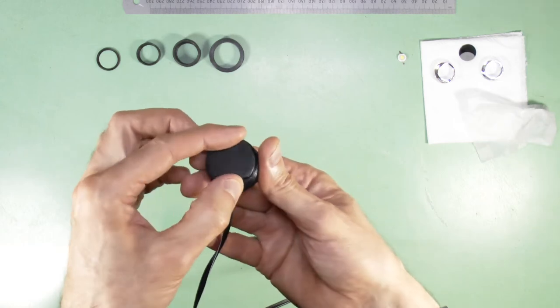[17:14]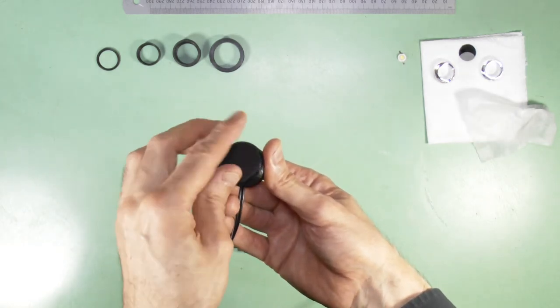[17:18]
You fit the filter by pressing it into the receptacle using a lens paper barrier between the filter and your fingers to prevent getting fingerprints and scratches on the surface. Take care not to crack the filter. If it feels too tight a fit, you can always bend the flexible walls of the filter holder back a bit and try again. Once the excitation filter is fitted, keep the spacer in the lamp housing and insert a protective screw cap to the lamp housing to protect from dust and scratches till we come to use it. Alternatively, the lower collector collimator can be fitted as a protective mechanism.
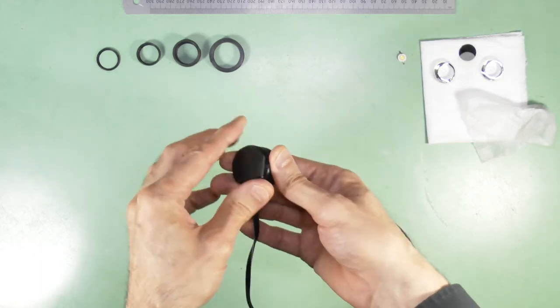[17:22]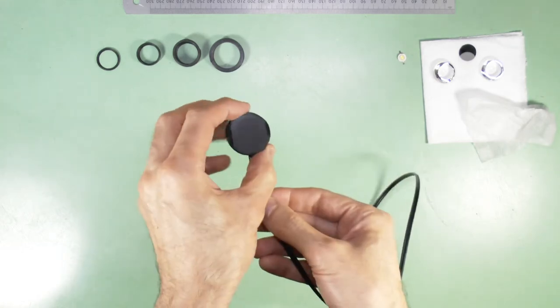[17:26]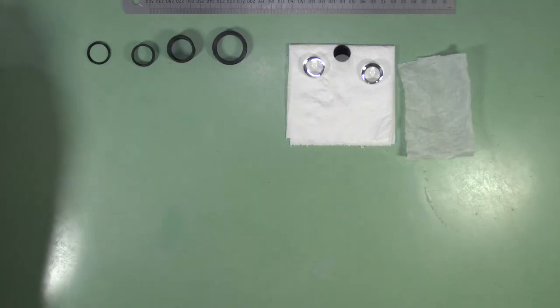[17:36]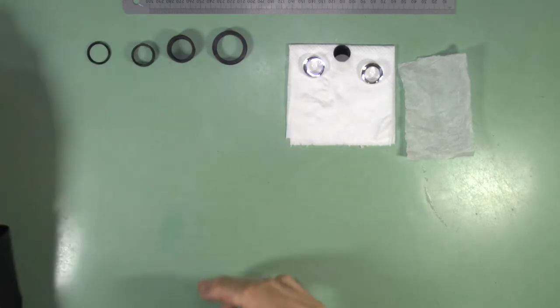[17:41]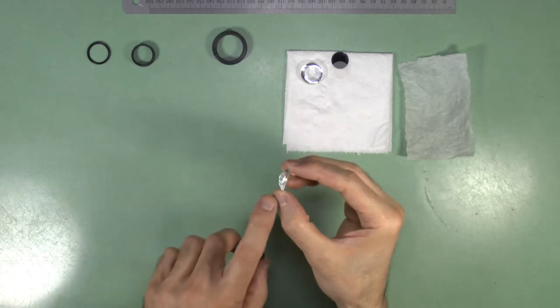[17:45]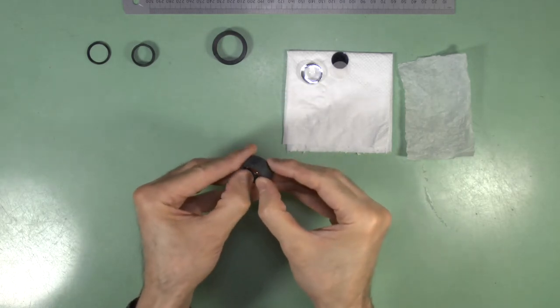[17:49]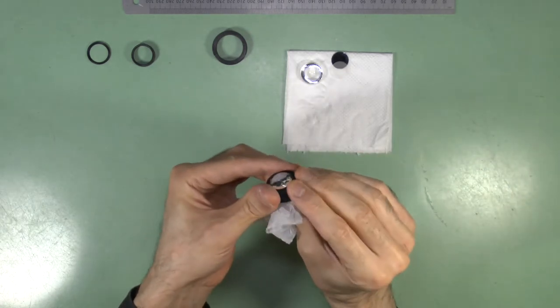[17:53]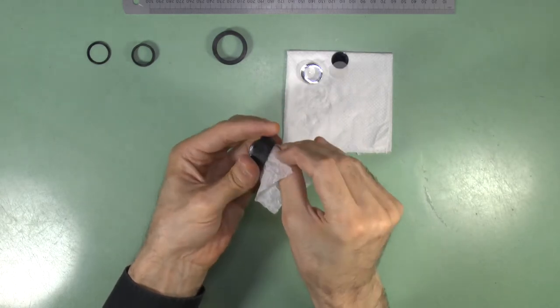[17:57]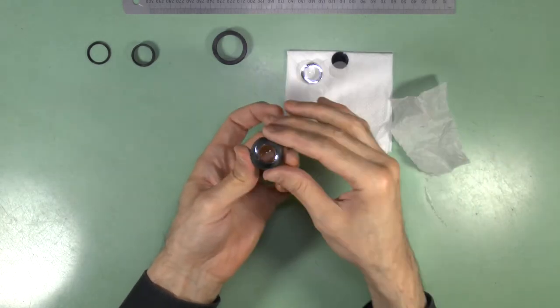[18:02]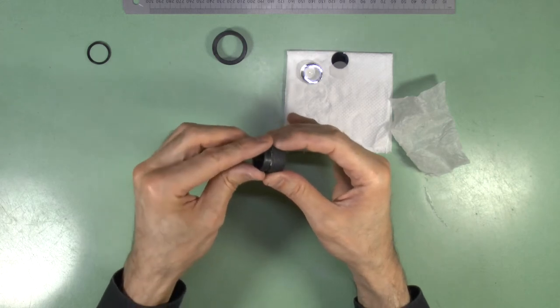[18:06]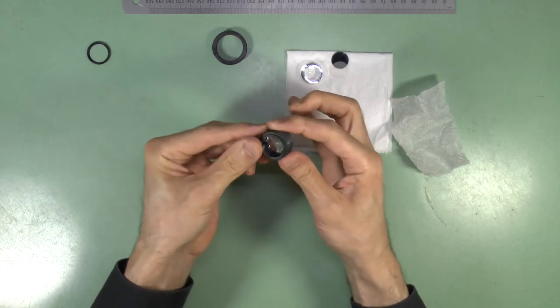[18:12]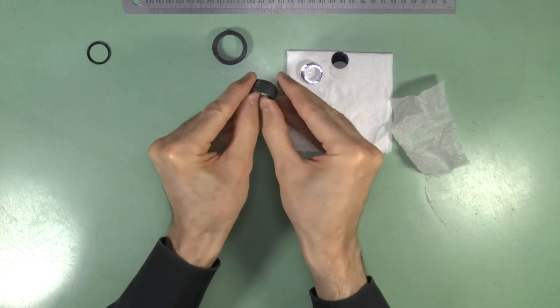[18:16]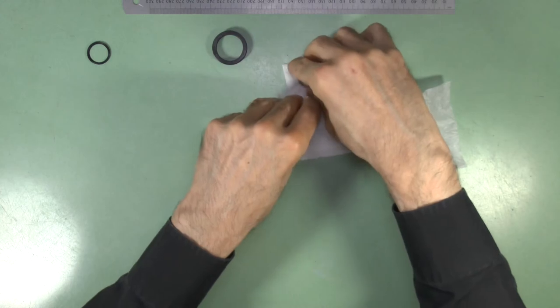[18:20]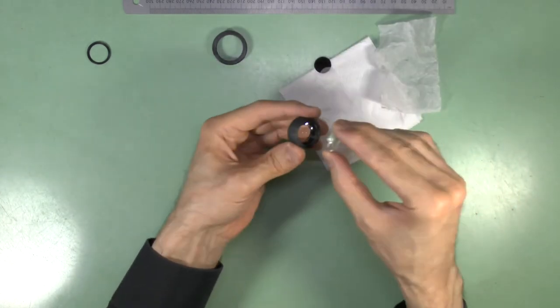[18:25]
I'll now show you how to construct the 2x23mm lower collector lens assembly. Insert a 23mm lens, convex side first, into the LC receptacle. Ensure it goes all the way down and its rim lies flat against the lip of the LC receptacle. Ensure the inner surface of this lens is free of any dust or fingerprints, then insert the 7mm collar into the LC receptacle, with the non-lipped side going in first to meet the lens already in the tube. Next, ensure the convex surface of the second 23mm lens is clean and insert it into the LC receptacle until it is stopped by the 7mm collar.
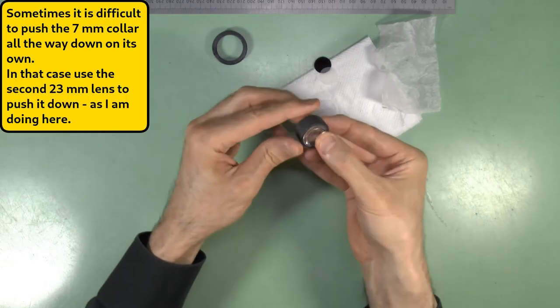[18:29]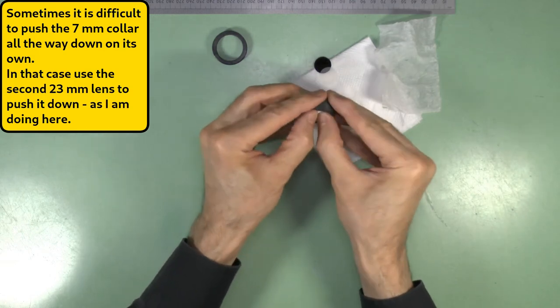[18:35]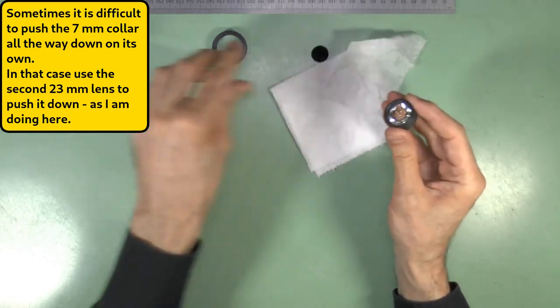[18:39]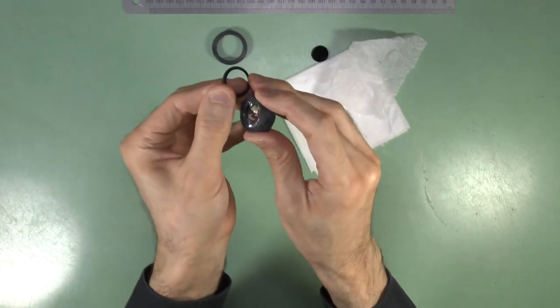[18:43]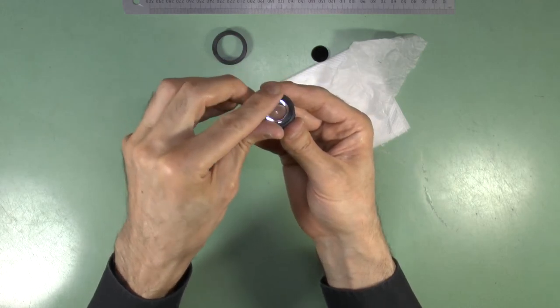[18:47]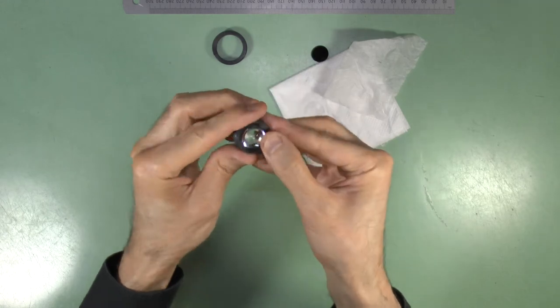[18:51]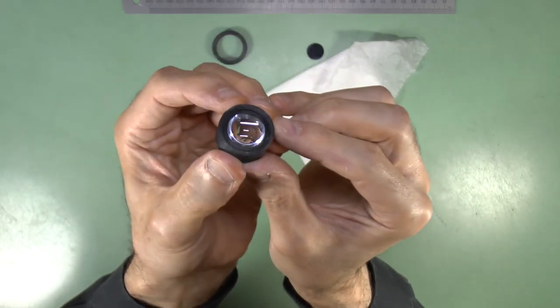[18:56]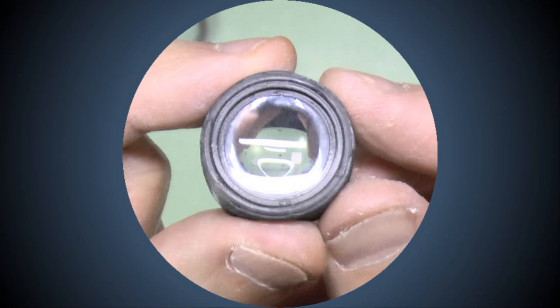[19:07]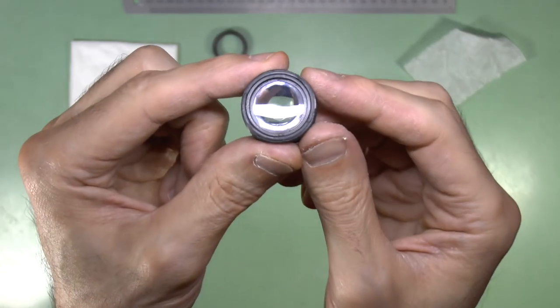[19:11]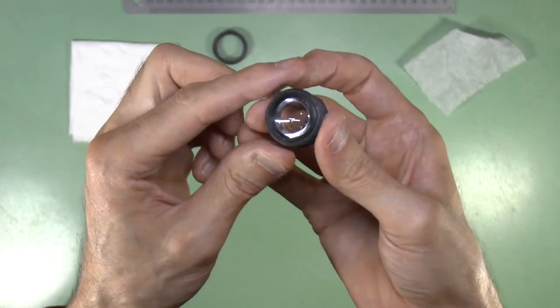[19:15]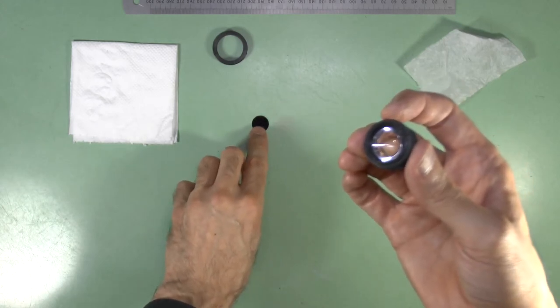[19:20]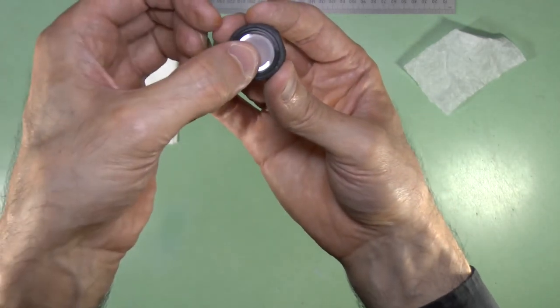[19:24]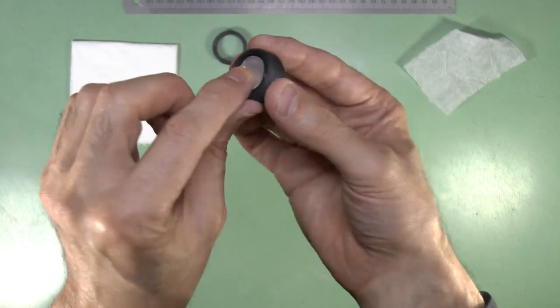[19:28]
Finally, insert the 2mm collar into the LC receptacle with the lip of the 2mm collar facing into the LC receptacle to make contact with the surface of the second 23mm lens. If everything is inserted fully, correctly and level, the 2mm collar non-lipped end should be flush with the end of the LC receptacle and your lower collector assembly is now complete. This shallow depression at the back of the collector may be used to place one or more 18mm diameter membrane filters and diffusers as required. A diffuser can be useful when doing Fourier filtration at the condenser's aperture for reasons I'll discuss in another tutorial.
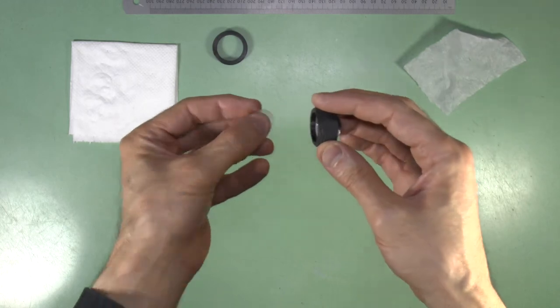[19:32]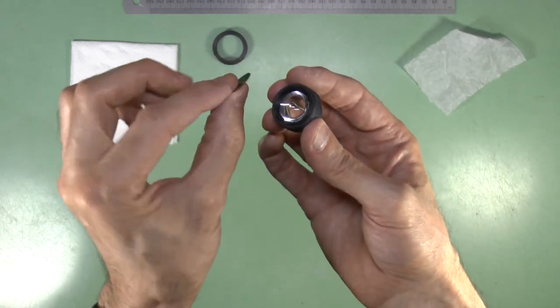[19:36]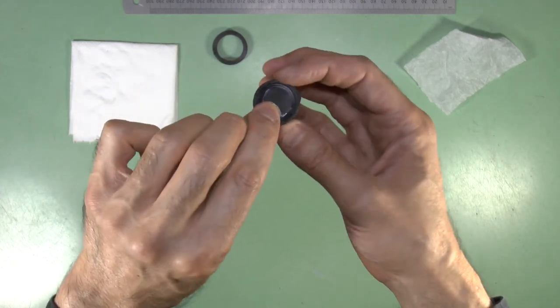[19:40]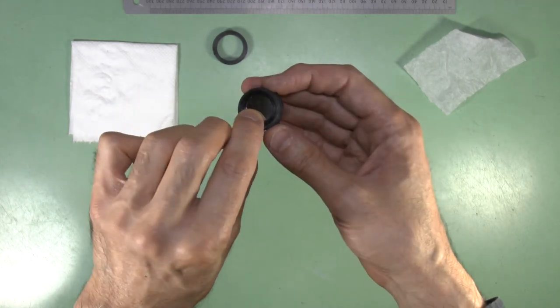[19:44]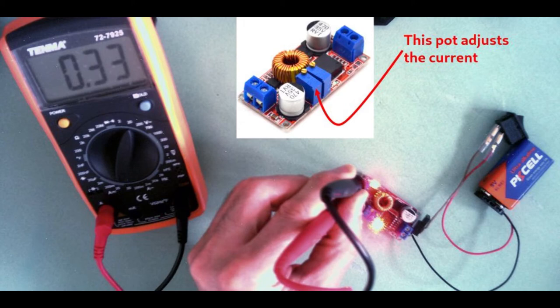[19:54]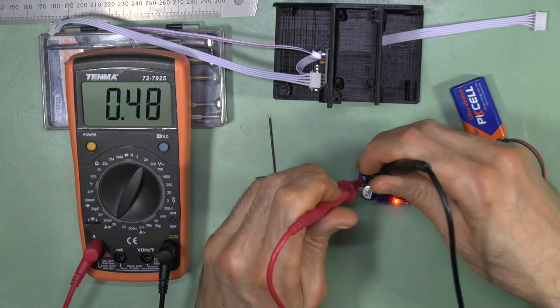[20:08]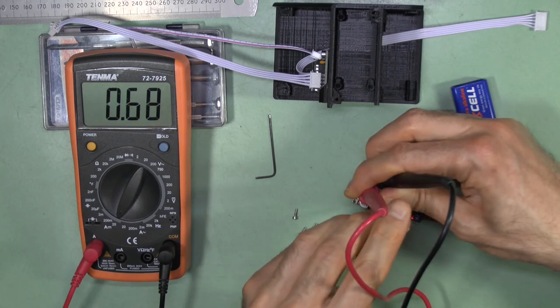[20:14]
Neutral density filters can also be placed here if the dimmest setting of the lamp controller potentiometer is still too bright for your application. However, if you constantly need a lower light level, it would be better to achieve this by turning down the current regulator potentiometer in the controller. This will be more energy efficient and give you longer battery life for portable use. ND filters are useful if you only need to attenuate the light for a temporary application, because if you use the current regulator control for this, then you will need to monitor the current when turning it back up to avoid overdriving the lamp and so cause it to burn out much sooner than its normal life expectancy.
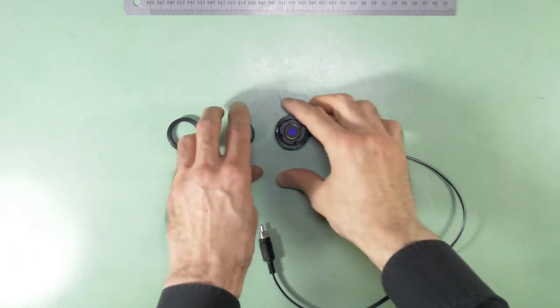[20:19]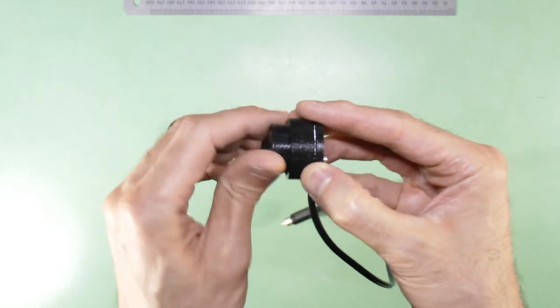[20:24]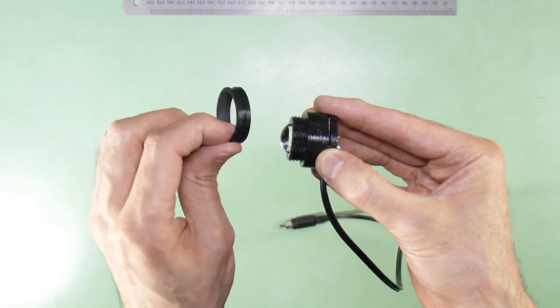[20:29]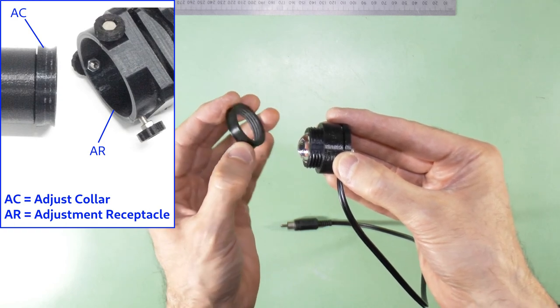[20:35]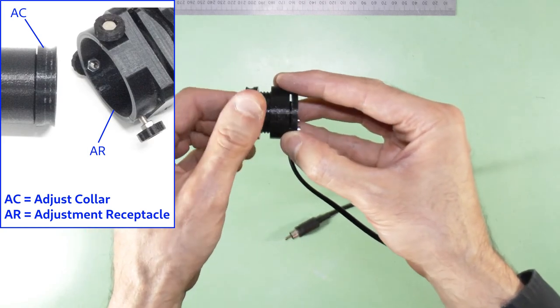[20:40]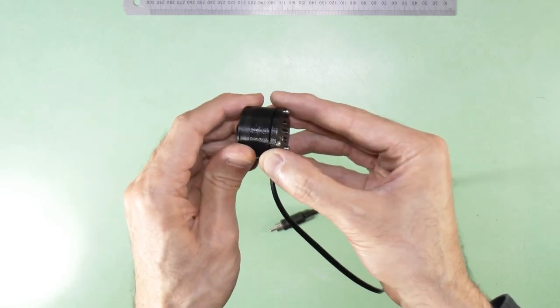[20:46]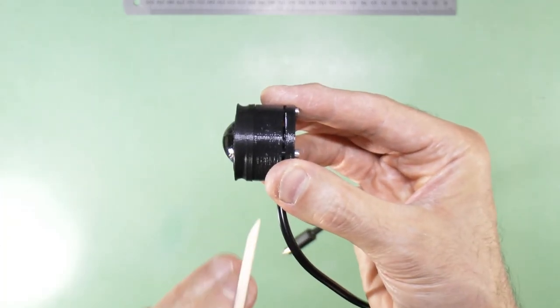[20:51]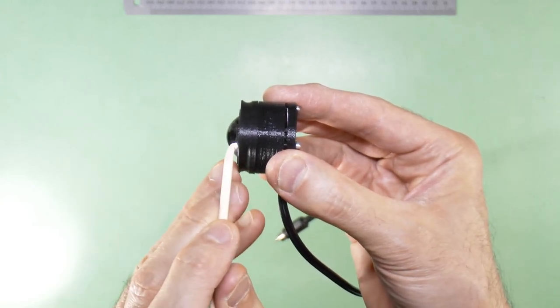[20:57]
The lower collector screws into the lamp housing such that the convex protruding aspect of the lens faces outwards. The LC adjust collar allows the lower collector lamp combo to articulate to the various trans and epi-illumination setups in a tri-screw adjustment receptacle, which allows for centration and angle adjustment. Screw the collar over the protruding part of the lower collector till it is tight up against the lamp housing. Note that this collar is asymmetrical, with a longer stretch of straight tube on one side of the indentation and a very short segment on the other side.
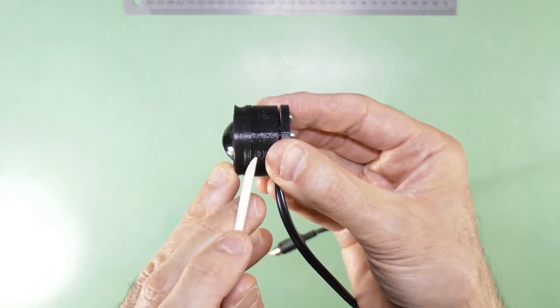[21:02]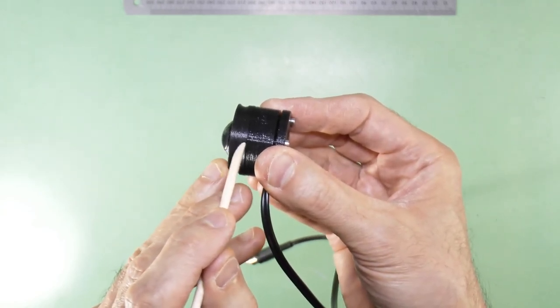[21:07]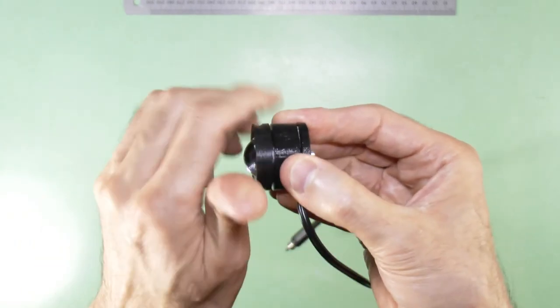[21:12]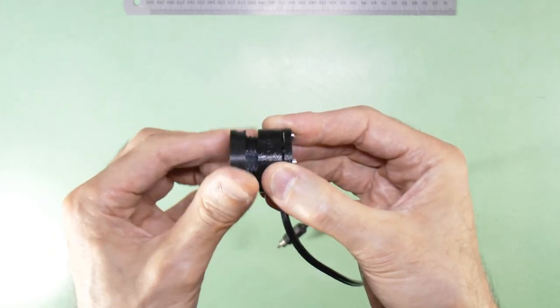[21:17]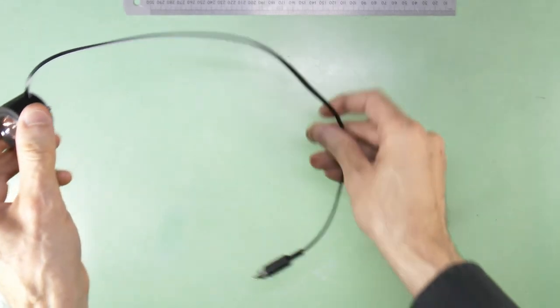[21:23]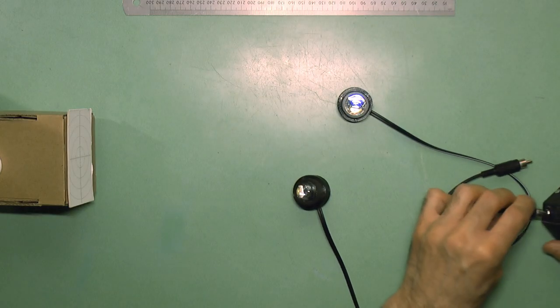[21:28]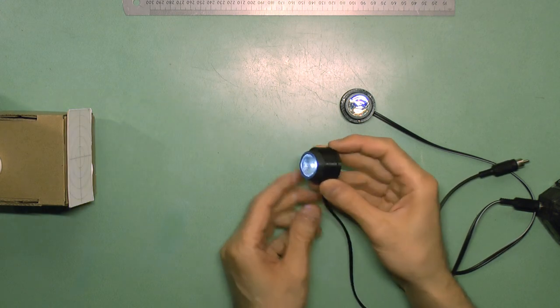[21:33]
The nominally correct orientation for use with Köhler illumination is to fit the collar with the longer stretch of the flat tubing facing the lamp housing. But if you want to reduce the distance from the lamp collector combo from the tri-screw adjustment receptacle for any reason, you could reverse this. Your LED illuminator is now complete and ready to fit to the various illumination setups of the PUMA microscope. These will be the subject of separate tutorials.